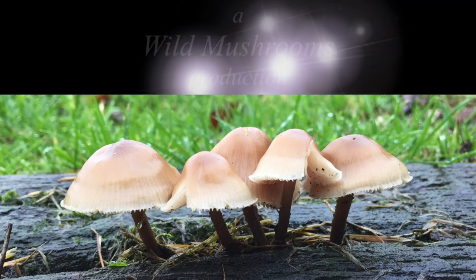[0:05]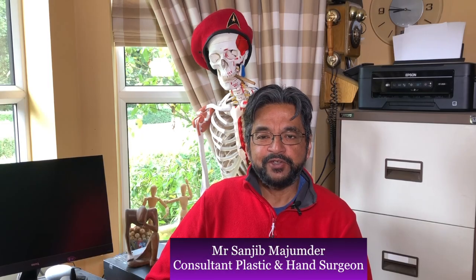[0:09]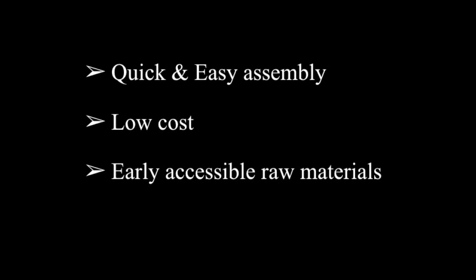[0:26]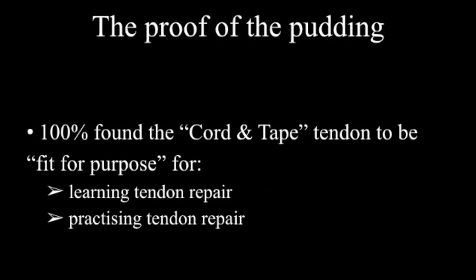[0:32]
Today, I'm going to show you how to make a tendon simulator which I invented. I call it the cord and tape tendon simulator. This tendon simulator can be assembled quickly using materials which are cheap and easily available. My trainees have found this to be an excellent simulator on which to learn and practice different tendon repair techniques.
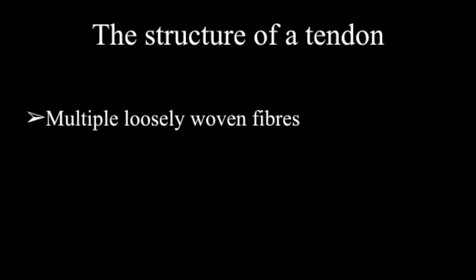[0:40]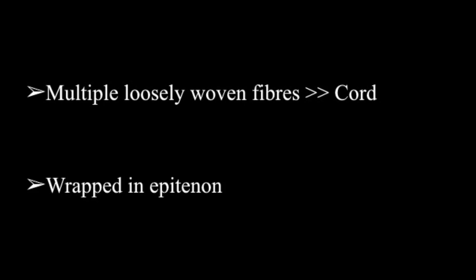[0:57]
Now, let's start with the basics. What's the structure of a tendon? Essentially, a tendon consists of multiple loosely woven, longitudinally oriented fibers, and these are wrapped in epitenon to keep it all in. Now, in my cord and tape tendon simulator, the fibrous core is simulated by a cord, and the epitenon is, you guessed it, simulated by a tape, a fabric tape.
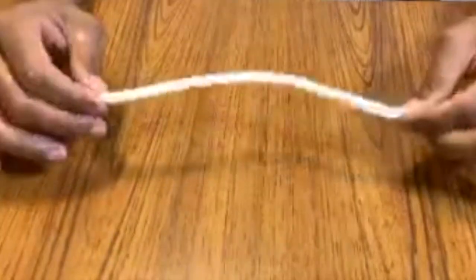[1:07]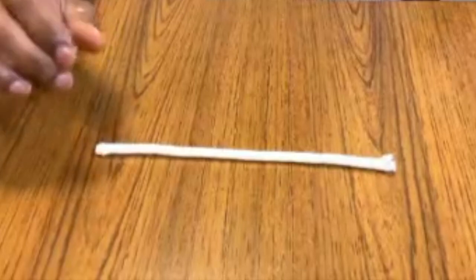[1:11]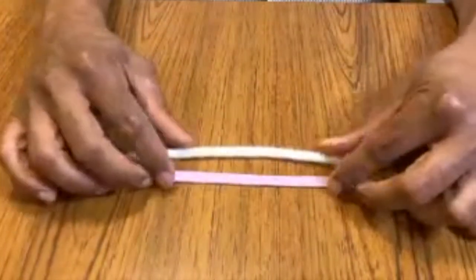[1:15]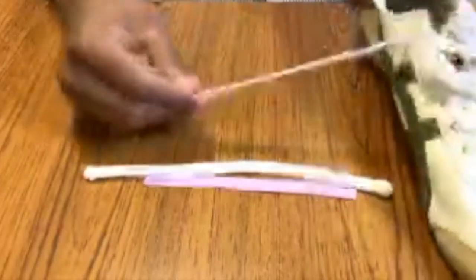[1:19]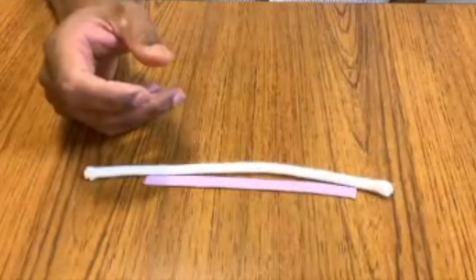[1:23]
So let's get started. What do we need to make this tendon simulator? We need a cord, and I suggest a bit of soft cord. You can get this in any DIY or hardware store. If you can't get that easily, you can take a bit of cord from a pair of pajamas, or you can even use a bit of shoelace from a pair of trainers. Don't cut the lace off your friend's shoe though. I won't be responsible for that.
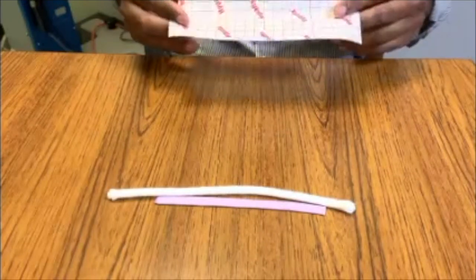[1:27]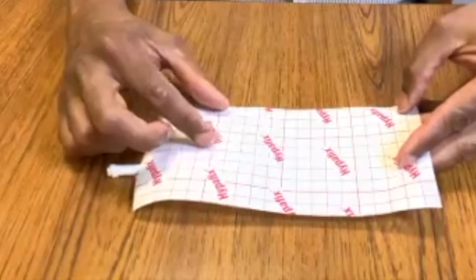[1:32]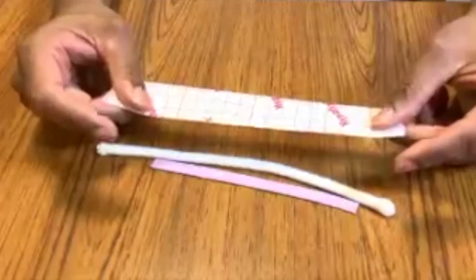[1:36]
Then we want to get something that acts as the epitenon, some self-adhesive fabric tape, such as Mefix or Hypafix. What we need to do is get a thin strip of tape, and as if by magic, I already have a thin strip of tape here.
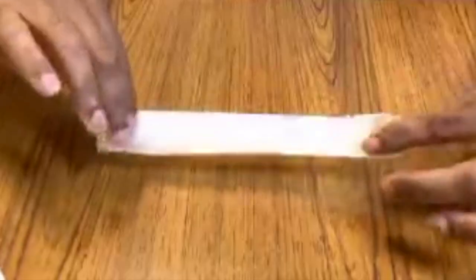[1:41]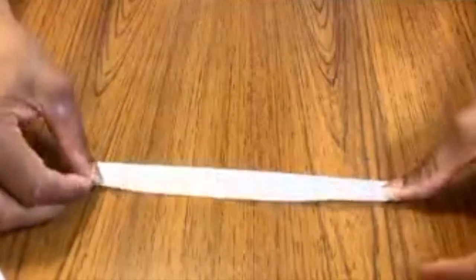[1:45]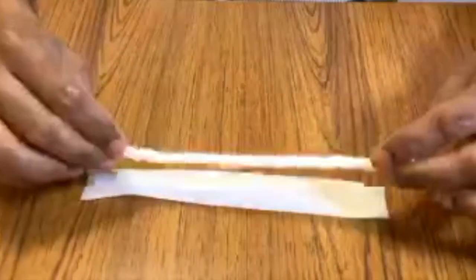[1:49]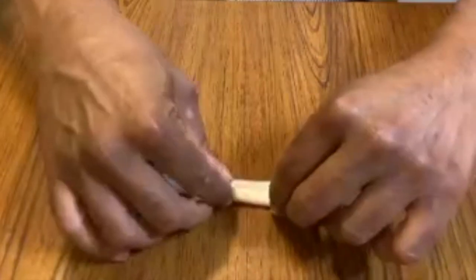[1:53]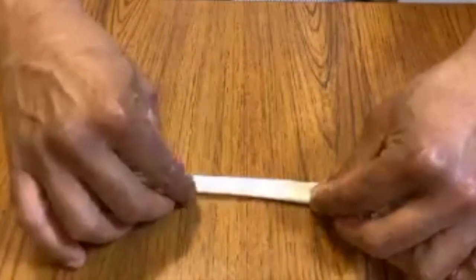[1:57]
Next, you peel off the paper backing of the sticky tape and stick the long edge of the tape onto the table like this and fold most of it back over, exposing the sticky side of the tape. Next, you take your cord and lay it onto the sticky surface of the tape like so. Then you roll it, like one rolls a roll-up cigarette. Of course, I'd be very disappointed if any of you smoke.
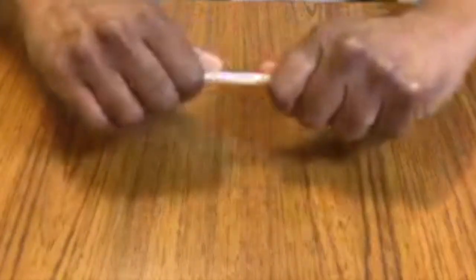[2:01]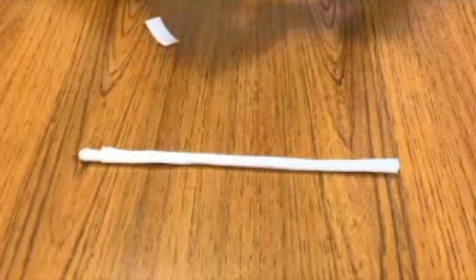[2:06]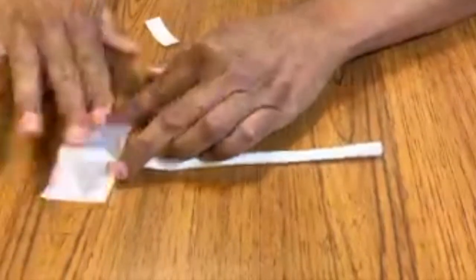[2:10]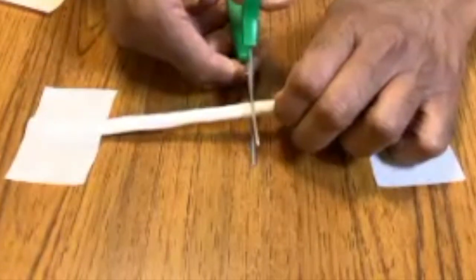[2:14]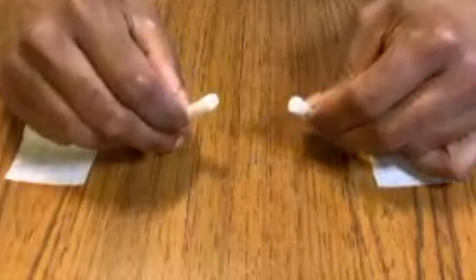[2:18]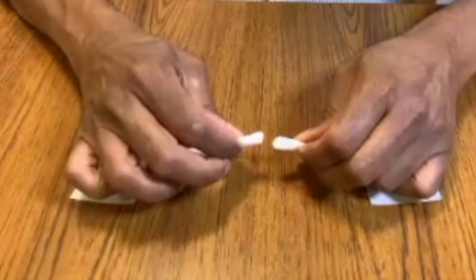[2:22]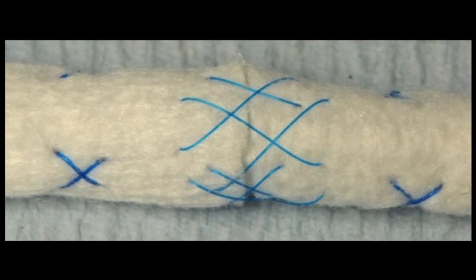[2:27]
And voila, you now have a simulated tendon. Next, you take two more pieces of sticky tape and stick your tendon onto the table, like this. Then you cut your tendon, which exposes, like in a real divided tendon, the frayed ends of the tendon with epitenon around it. You can now practice any form of tendon repair you wish, both the core and epitendinous repair.
After you've done your repair, you should visually assess your repair for neatness. Ideally, the repair should not be bulky, nor should it have any frayed bits of tendon sticking out. Then you can test your tendon repair for gapping and failure by trying to pull it apart.
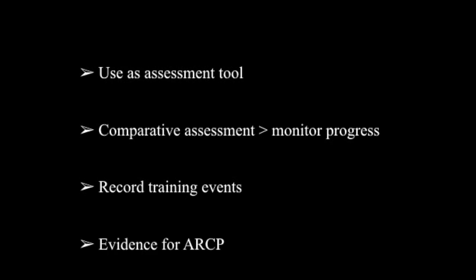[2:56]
If you put a label adjacent to each repair you do with the date you've done them, you can have them assessed by your trainers at their convenience. You can monitor your progress and see if you're improving. And if you wish, you can even take your tendon repairs to the ARCPs to demonstrate your progression doing simulation tendon repairs.
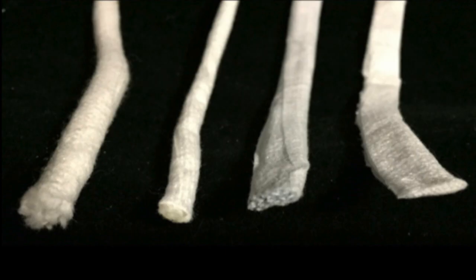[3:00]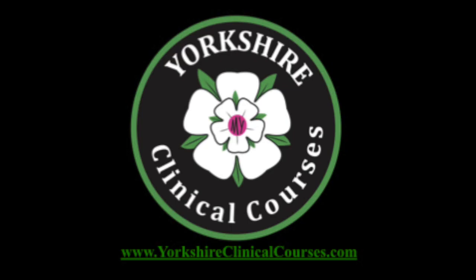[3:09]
Also, if you use cords of different shapes and sizes, you can simulate flexor tendons, extensor tendons, and tendons of different parts of the body. Have fun and practice hard.